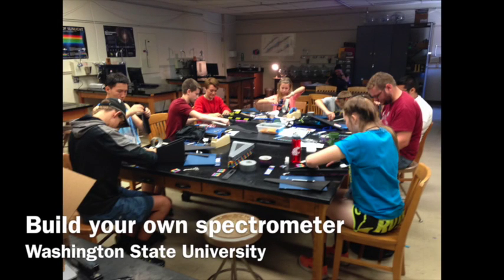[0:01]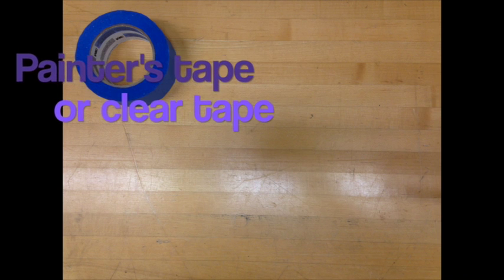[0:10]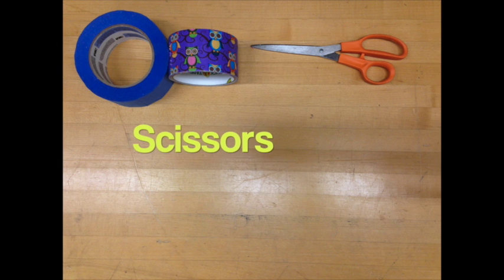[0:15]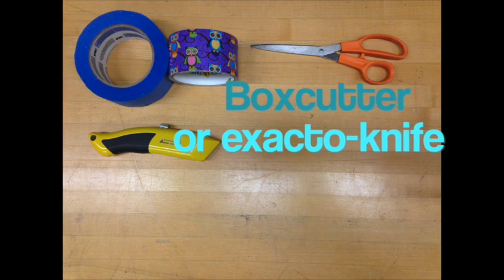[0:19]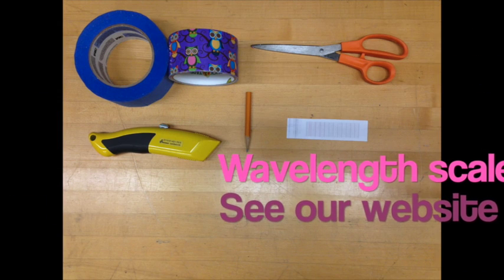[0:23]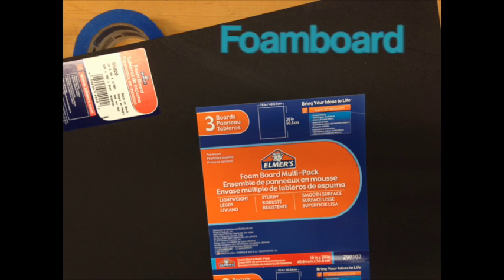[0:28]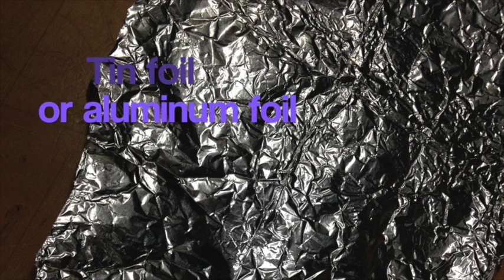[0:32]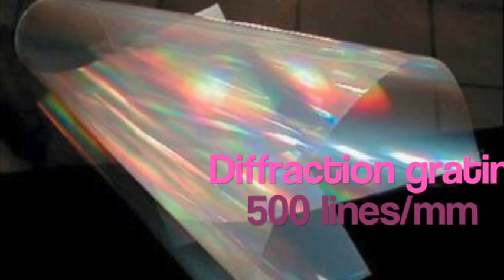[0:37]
We're going to tell you how to build your own spectrometer. First, you need to gather these materials. You'll need painter's tape or clear tape, fun duct tape or regular duct tape, scissors, a box cutter or X-Acto knife, a pen or a pencil, a wavelength scale, which you can find on our website. You'll need a ruler with units in metric and English, and foam board, which you can find online or in stores. And tin foil or aluminum foil. And a diffraction grating with 500 lines per millimeter.
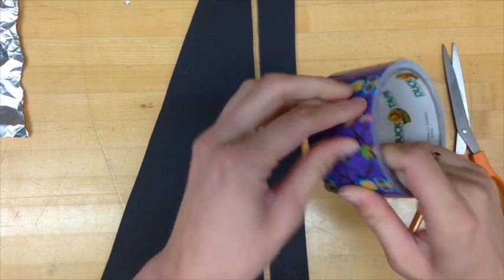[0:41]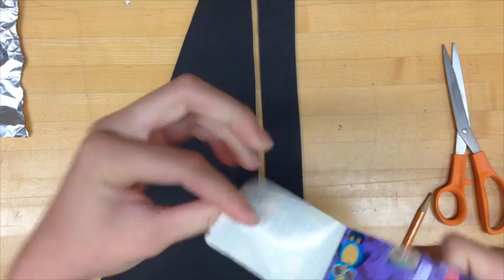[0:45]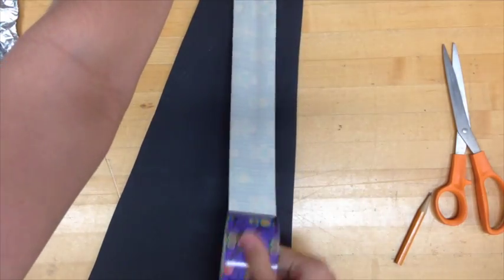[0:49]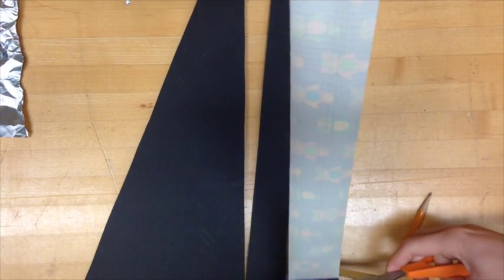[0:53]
We find it easiest to pre-cut out the foam board pieces for students before we do the activity, so that way they don't cut themselves with a box cutter. You can find the instructions for cutting out the materials on our website. After you've cut out the materials using the foam board and box cutter, you'll need to build the spectrometer.
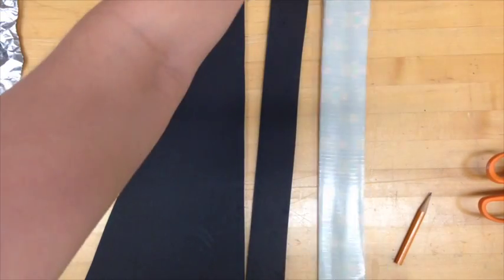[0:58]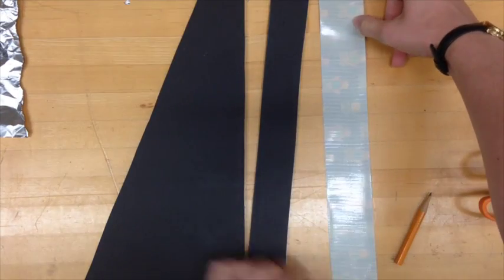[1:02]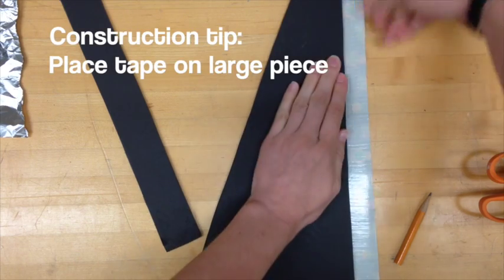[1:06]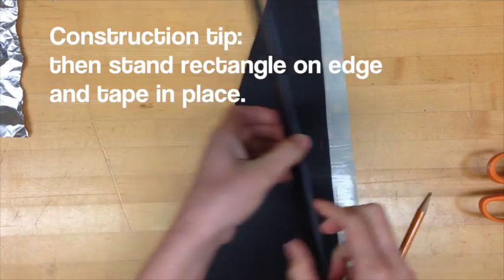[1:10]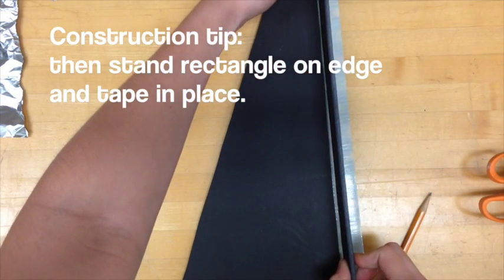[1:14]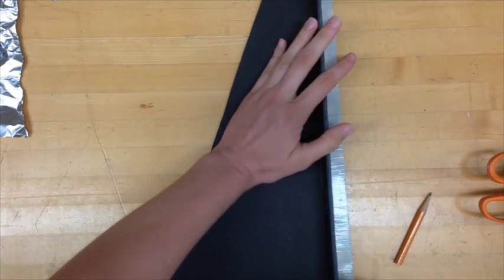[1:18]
First, you want to start with a base. You'll need to use one of the trapezoidal pieces and one of the rectangular pieces that you've cut out. We like to use fun duct tape because we find that it encourages the kids to use these spectrometers once they go home. We find it easiest to lay the piece of duct tape down on the table, then put one piece on the duct tape, and then stand the rectangular piece on edge so that you can press it into the duct tape and then fold the duct tape up on top of the rectangular piece.
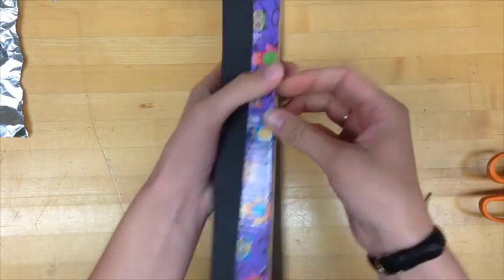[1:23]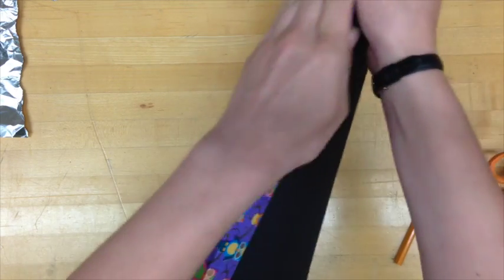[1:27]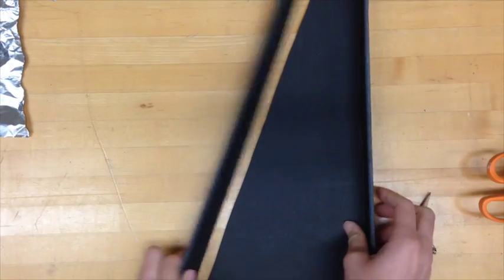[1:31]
The fun duct tape can be a little bit expensive, so if you want, you can use the regular duct tape with permanent markers to decorate it. Finish construction with the other pieces of the outer body.
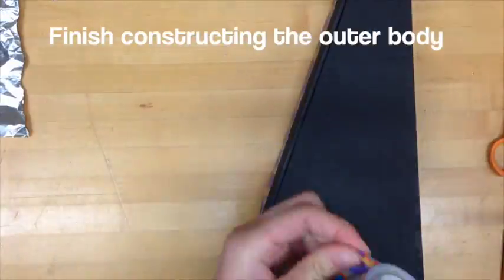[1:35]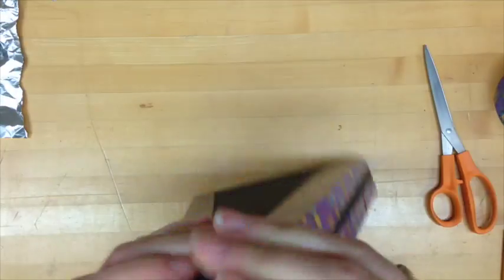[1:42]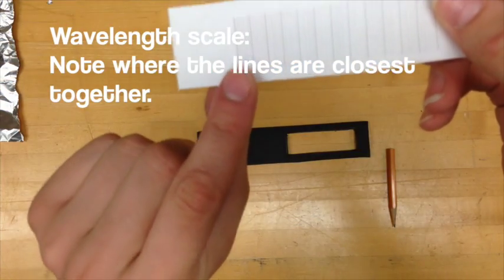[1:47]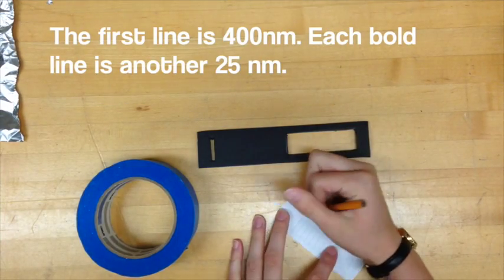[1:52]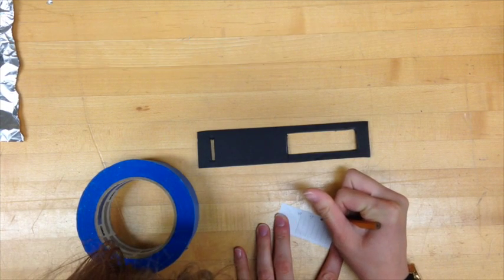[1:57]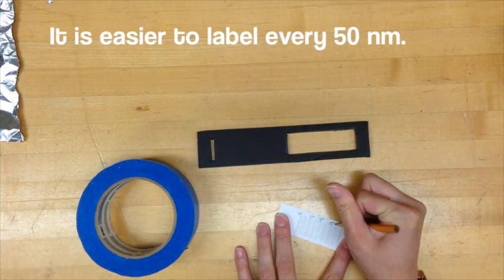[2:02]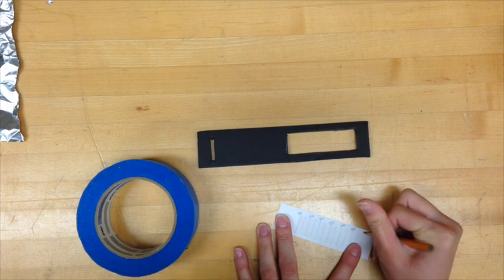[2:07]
Once you've finished constructing the outer body, it will be important to build the wavelength scale correctly. When printed, the scale should be 2.75 inches in width and 0.875 inches in height. Note where the lines are closest together. This is where the 400 nanometer line starts. Each bold line is an increase in 25 nanometers from 400 nanometers to 700 nanometers. We recommend recording every 50 nanometers. When the scale is finished, you can set it aside temporarily.
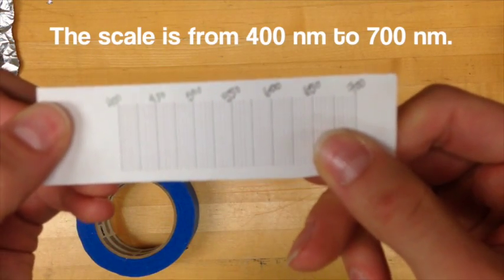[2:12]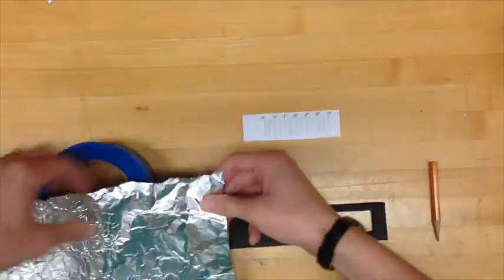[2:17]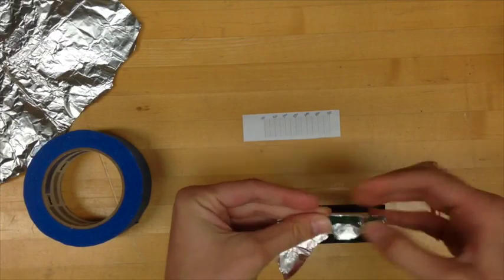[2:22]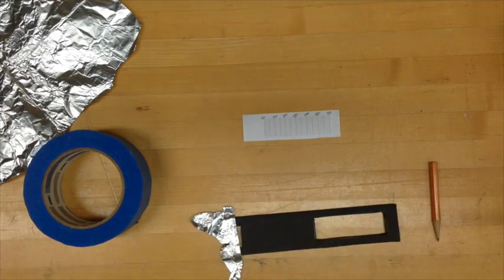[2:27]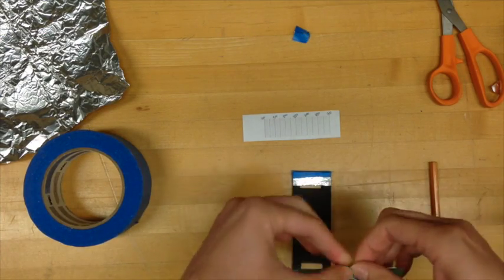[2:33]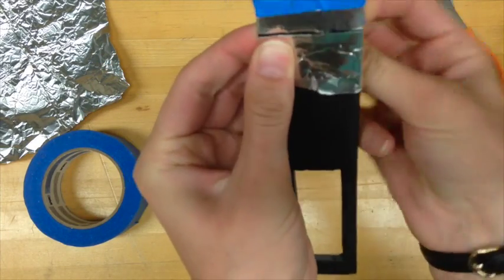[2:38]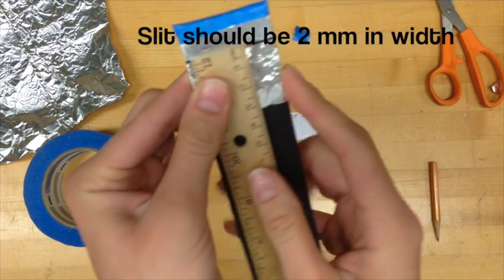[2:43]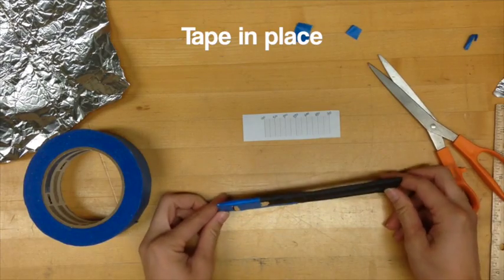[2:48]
We're going to build the slit to let the light through now. Tear a piece of aluminum foil and fold the edge to make a nice, straight, crisp edge. This will help make a very nice and thin area for the light to come through. Once you tape the top part of the slit in place, you'll need to make the bottom part of the slit. Fold another piece of aluminum foil or tin foil and tape it in place. You want the slit to be approximately 2 millimeters in width. Once your pieces of tin foil are approximately 2 millimeters apart, tape them securely in place.
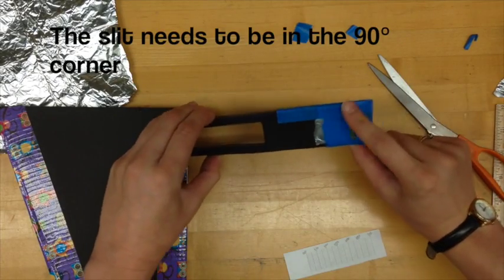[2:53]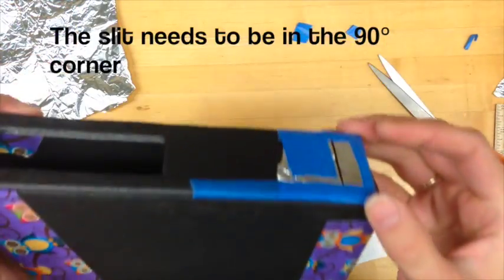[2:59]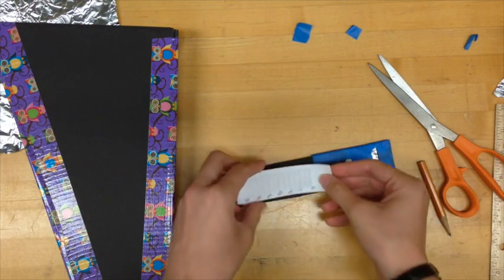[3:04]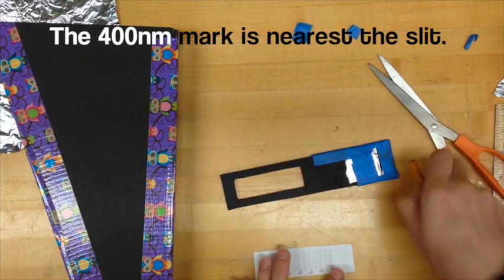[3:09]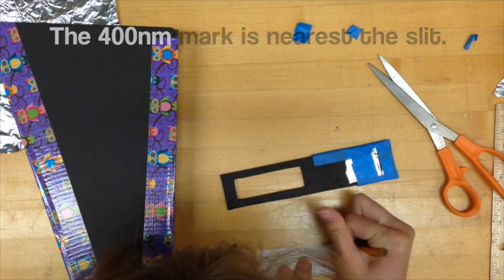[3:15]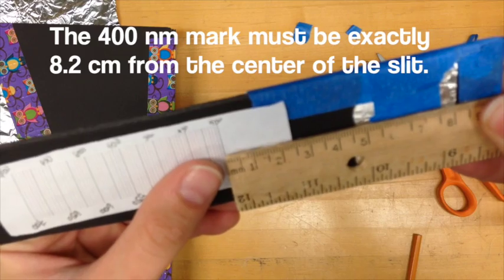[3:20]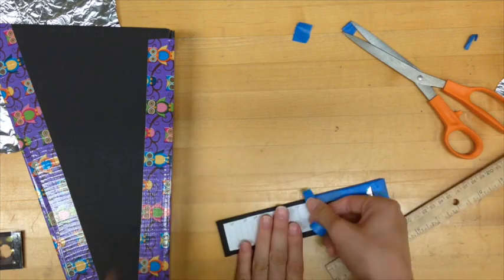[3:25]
The slit needs to be in the 90-degree corner of the body of the spectrometer. As you can see, my scale is upside down, so I flipped it over and labeled it right side up. The 400 nanometer line will be the closest to the slit, so make sure your scale is oriented properly. The 400 nanometer line needs to be exactly 8.2 centimeters from the center of the slit. Once the scale is in the correct location, tape it firmly in place. You don't want it to fall off.
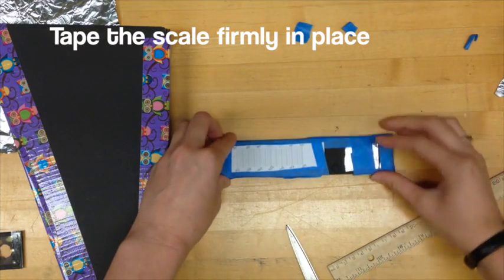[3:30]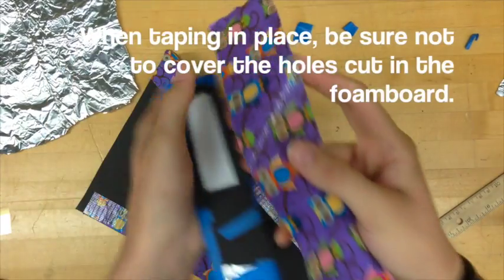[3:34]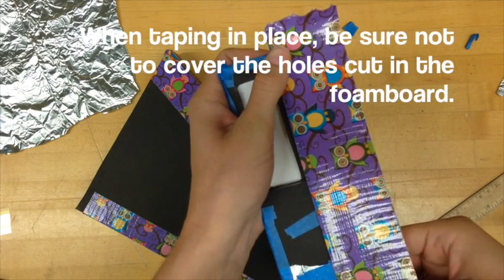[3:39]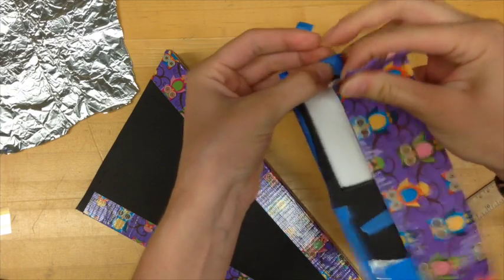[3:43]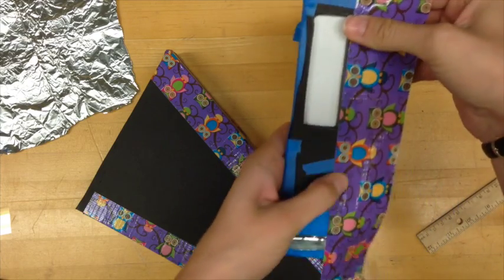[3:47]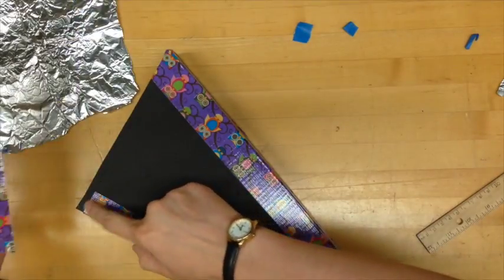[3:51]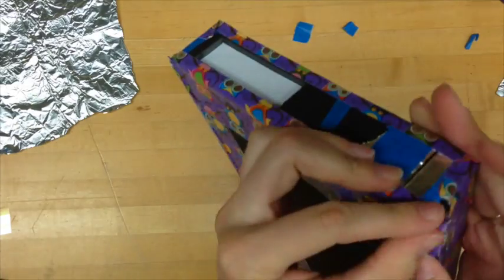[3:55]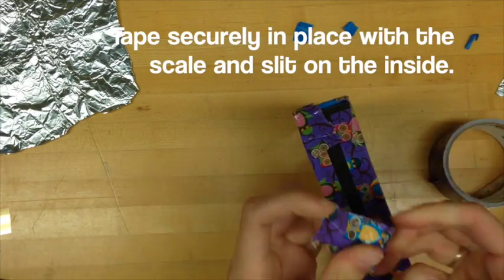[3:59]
You're going to need to take apart your entire spectrometer to put it back on. When taping this piece in place, you want to make sure you're not covering any of the holes that you've cut in the foam board. You spent so much time cutting them out, it would be so sad if you covered them up with duct tape. Remember that the slit needs to be in the 90-degree corner, otherwise your scale will be a little bit off. Tape this piece securely in place with the spectrometer scale on the inside and the slit also on the inside.
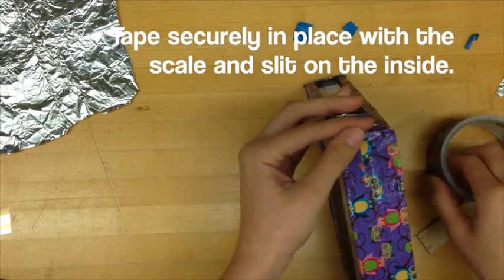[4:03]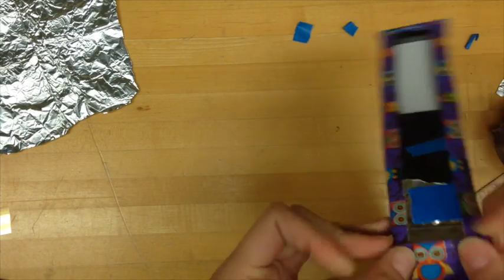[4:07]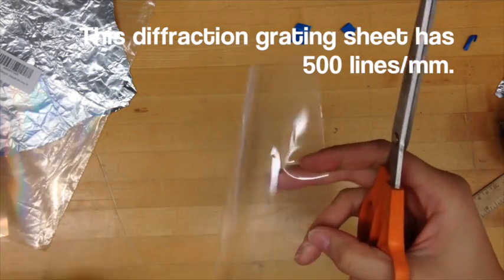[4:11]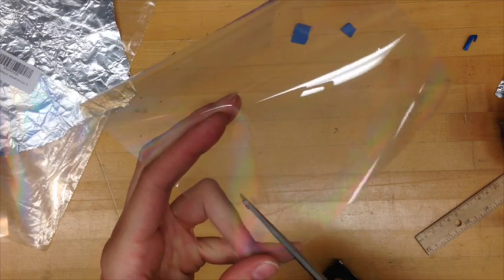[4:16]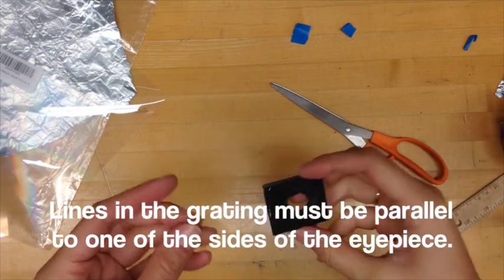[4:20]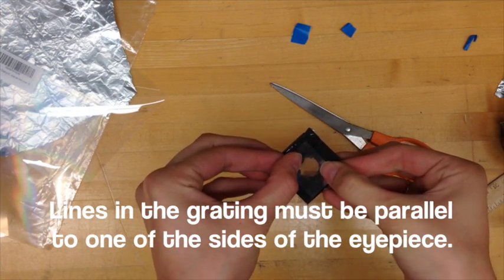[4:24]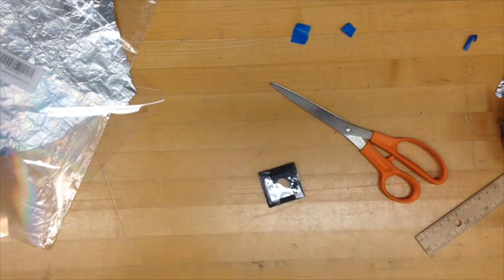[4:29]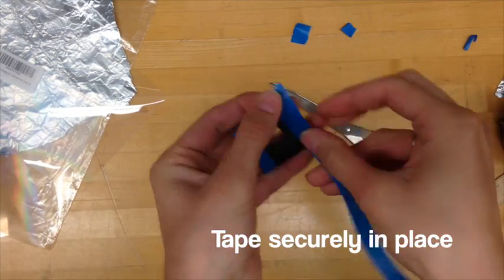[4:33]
Now it's time to build the eyepiece. You can pre-cut out the diffraction grating squares for your students, or you can have them cut out their own. It's up to you. We find that cutting them out ahead of time is easiest. The diffraction grating lines will need to line up with one of the edges of the eyepiece, so that way it'll be easy to line up with the scale. I've used double-sided sticky tape to put my diffraction grating in place, and then I'm using painter's tape to tape it very securely in place so it doesn't fall off.
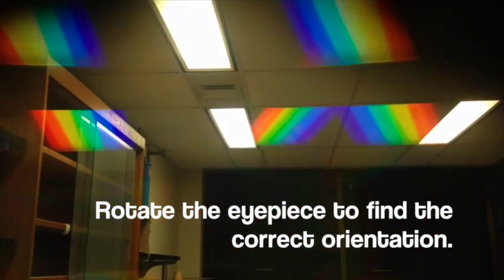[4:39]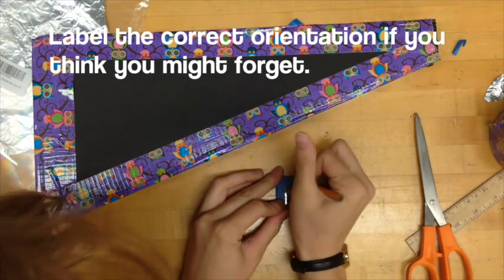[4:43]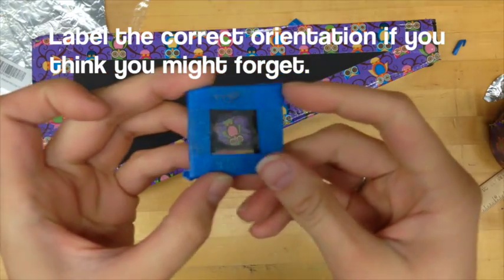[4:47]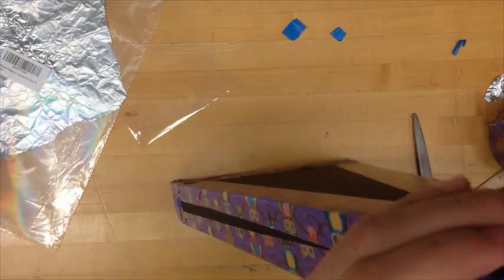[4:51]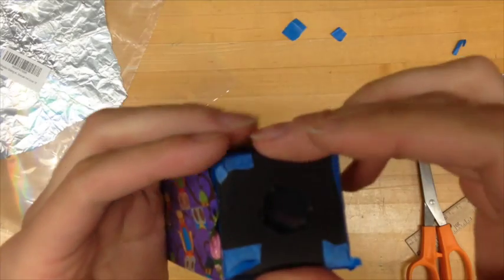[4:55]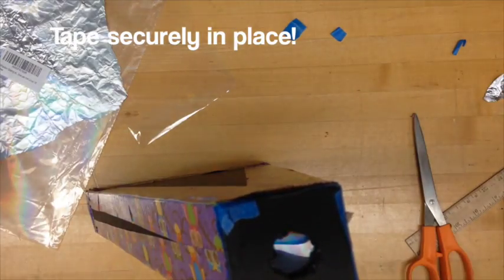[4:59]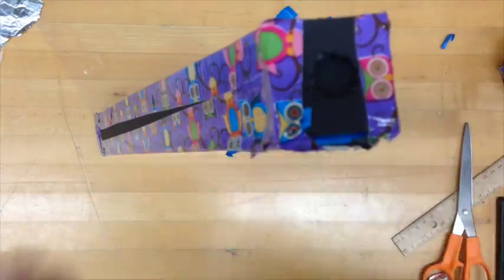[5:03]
Hold the eyepiece up to the light and rotate it to find the correct orientation. We want the light to come in through the slit and be deflected onto the scale such that the light rays are parallel to the scale. Sometimes it helps to label the correct orientation before you tape it securely in place. It may help to, at first, tape the eyepiece in place with painter's tape, double check the alignment is correct, and then tape it in place with duct tape.
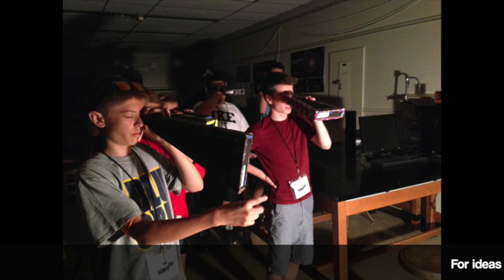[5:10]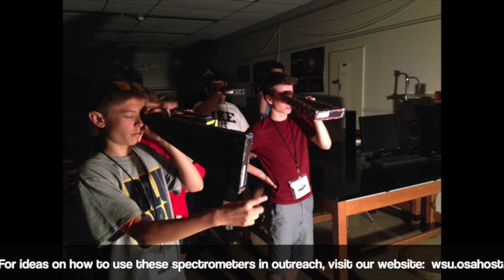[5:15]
Point the slit at your light source and look at the spectra on the scale. Make sure to never point the slit directly at the sun or directly at a laser. You can look at these things by bouncing them off of a white piece of paper.